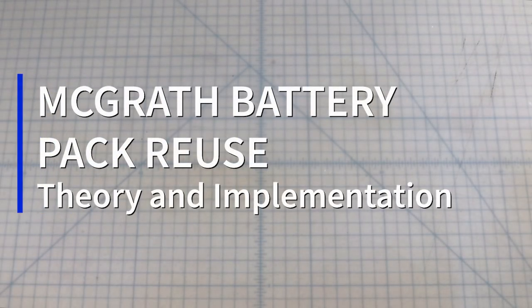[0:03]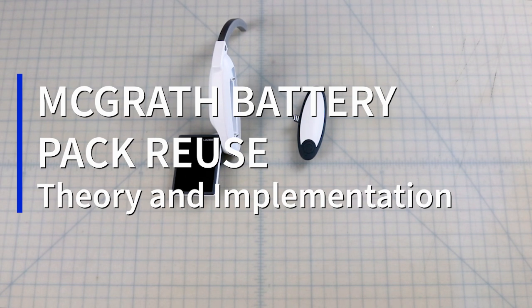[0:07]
In this video, I will discuss a straightforward method for reusing McGrath video laryngoscope batteries. Due to recent production problems with McGrath batteries, which are produced overseas, batteries have been intermittently available for purchase.
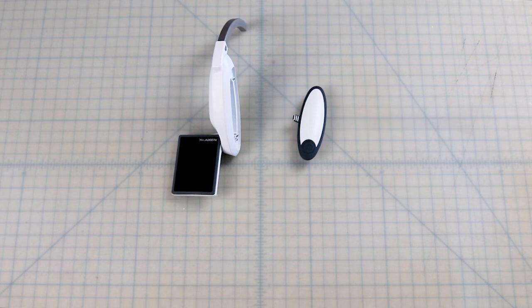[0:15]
Because it is the primary video laryngoscope of my institution, as well as many others, and it is a vital tool during the COVID crisis that we cannot be without, I wanted to ensure that we would not lose access to this vital tool due to battery unavailability.
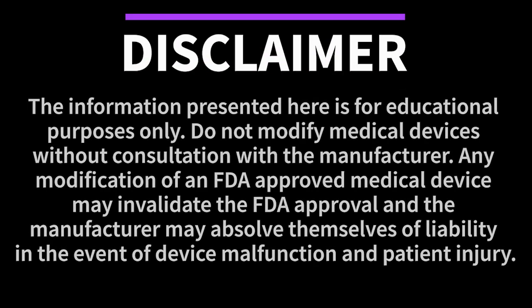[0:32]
Warning: this information is presented for educational purposes only. Do not modify medical devices without consultation with the manufacturer. Any modification of an FDA-approved medical device may invalidate the FDA approval, and the manufacturer will likely absolve themselves of liability in the event of device malfunction and patient injury.
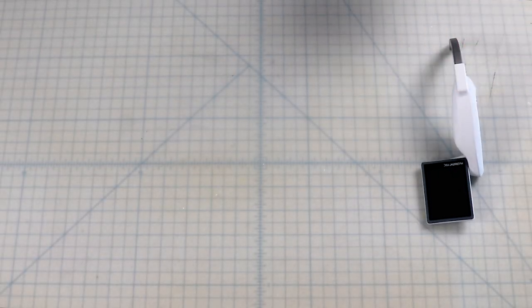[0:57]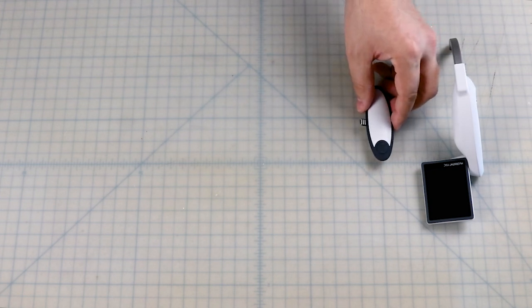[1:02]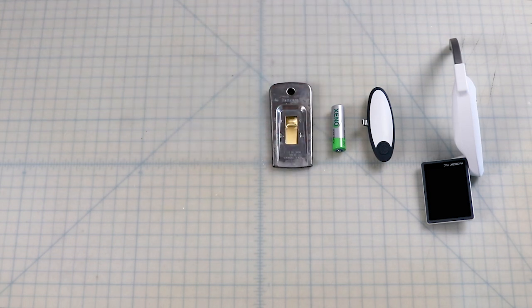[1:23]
Items that you will need to reuse a McGrath battery pack. Used battery pack. New 3.6 volt AA lithium battery cell. Note that this is not the standard 1.5 volt battery cell ubiquitously used in consumer electronics. However, these battery cells can be purchased online for two to three dollars each. Razor blade. Small screwdriver.
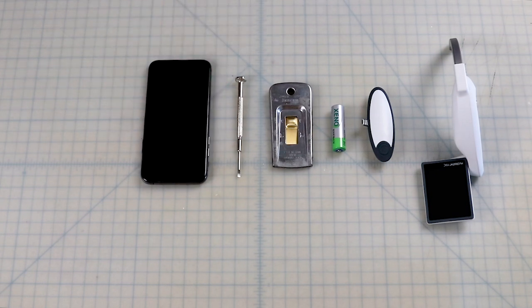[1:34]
Cell phone with near-field communication capabilities, and a cell phone app for NFC reading and writing. Even if you don't use the function, your smartphone probably has NFC capabilities if it was made in the last two to three years. I'll be using an iPhone XS for this video and a free app called NFC Tap. I'll also be using a brand new battery for demonstration purposes, but you will not need a brand new battery to follow this guide.
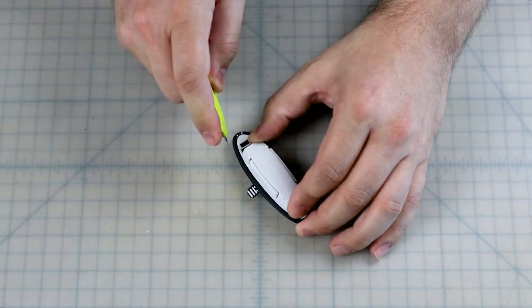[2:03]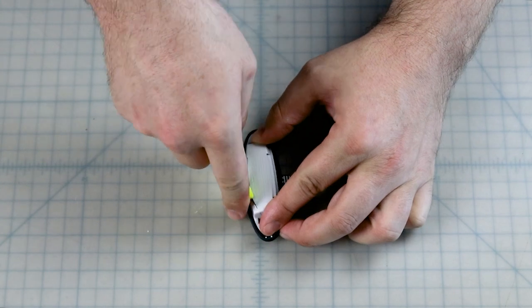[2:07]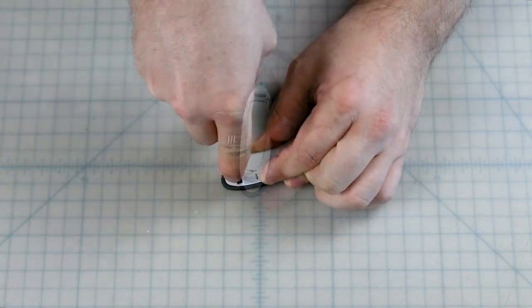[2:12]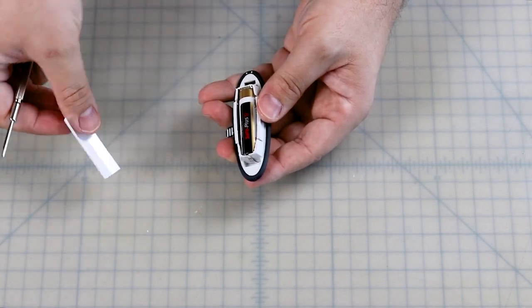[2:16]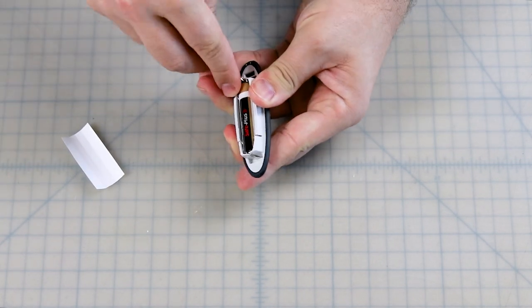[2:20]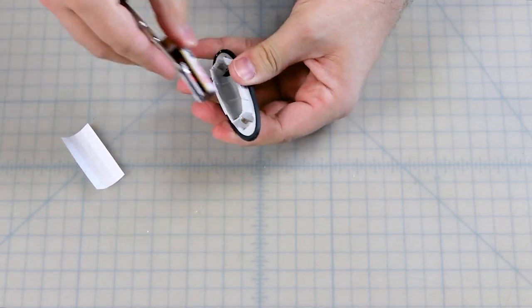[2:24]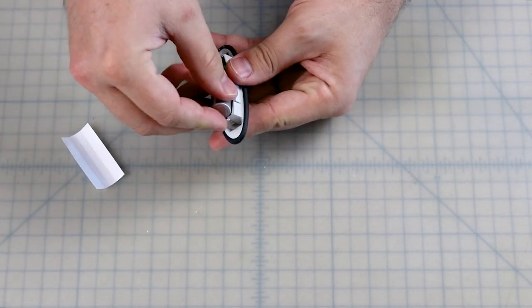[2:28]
Start by cutting the battery cell out of the back of the battery pack. Remove the paper wrapping and gently pry out the old battery cell so as not to damage the housing. Replace the old battery cell with a new one. I don't know that the paper casing has any purpose, but I place that back as well.
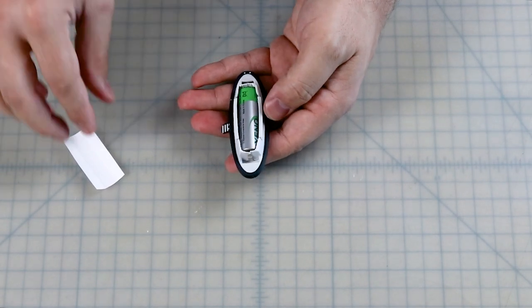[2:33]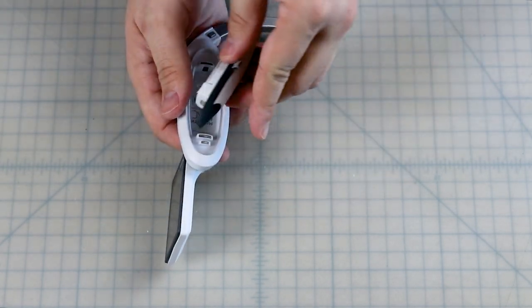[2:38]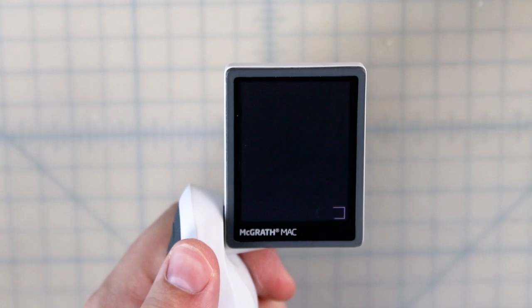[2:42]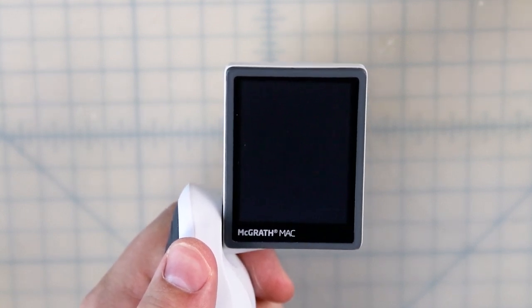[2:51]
If we insert the battery pack back into the McGrath and press the power button, we see that the battery pack powers the laryngoscope, but still reads as empty. This is because the number usually shown at the bottom of the screen is not a battery meter, but a preset counter that starts at 250 minutes and counts down to 0 minutes, regardless of battery level.
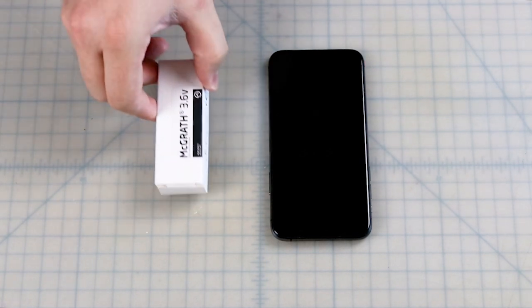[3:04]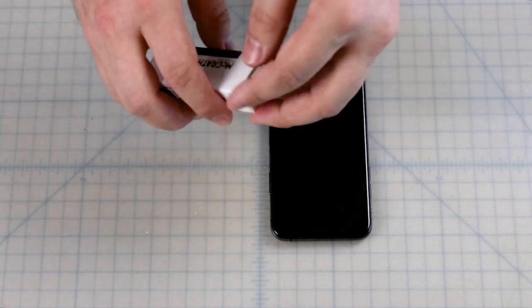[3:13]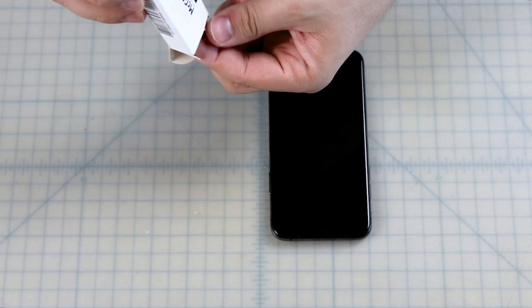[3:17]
In order to reset the battery counter, we are going to take the data from the RFID tag of a brand new battery and write it to the old battery, essentially resetting the counter to 250 minutes, as if it was a brand new battery. First, I'll hold the battery pack against the NFC reading region of my phone and open the NFC app.
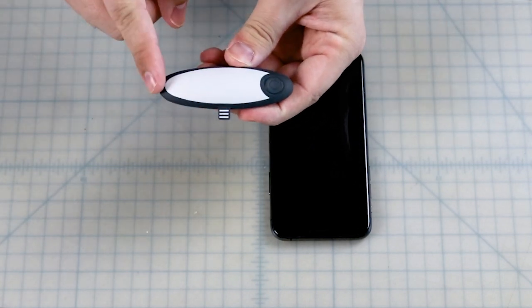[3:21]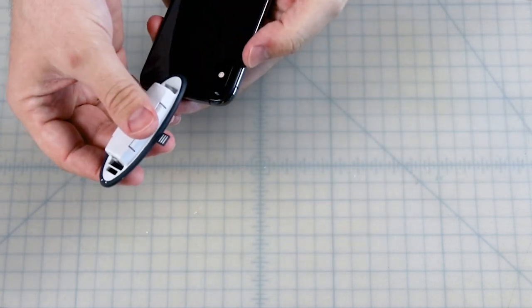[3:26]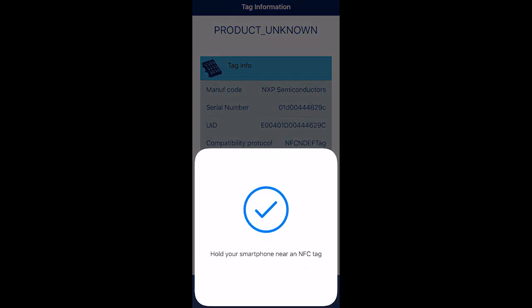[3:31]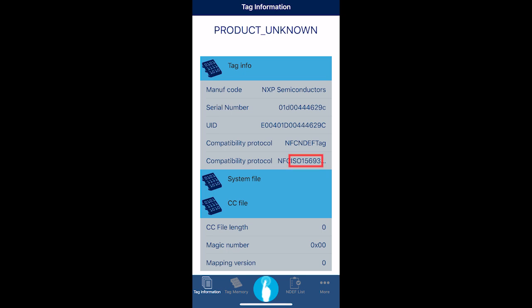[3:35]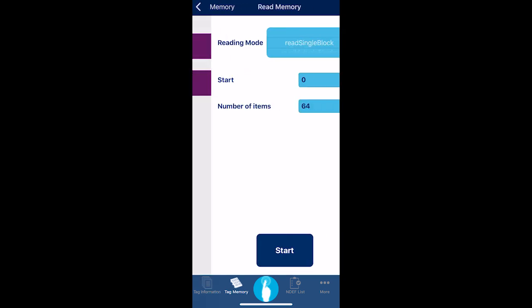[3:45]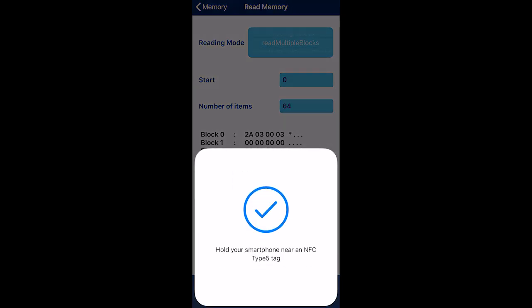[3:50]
On this particular app, press read tag to read the chip and calibrate the app to the correct communication protocol. On some apps, you will need to set the protocol manually. The protocol is ISO 15693. We'll then go to the memory tab and press read, read multiple blocks, and start. This will give us the data we need in block 0 and block 1. The rest of the blocks are not needed.
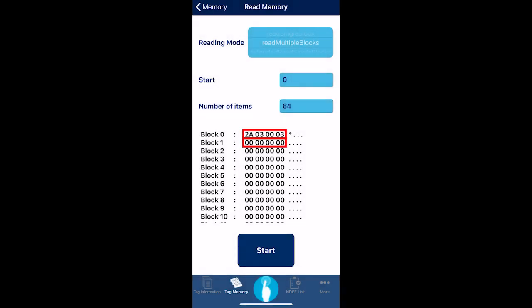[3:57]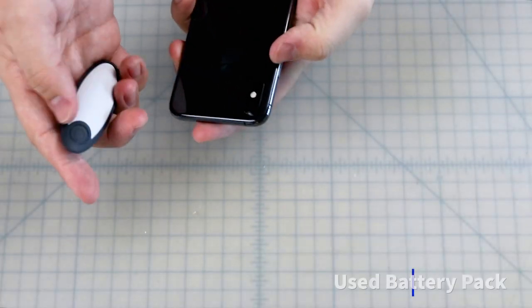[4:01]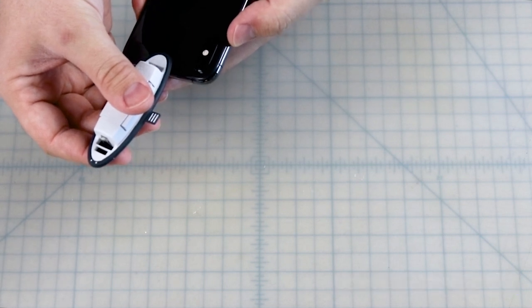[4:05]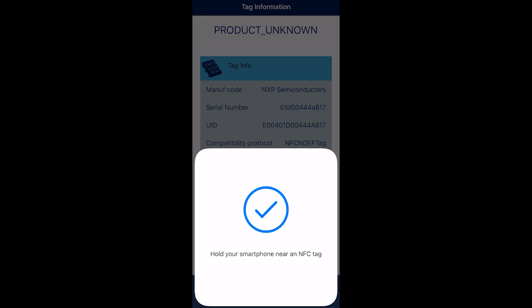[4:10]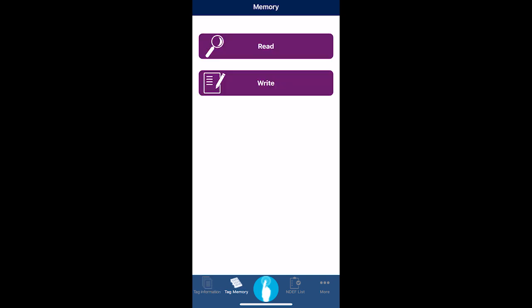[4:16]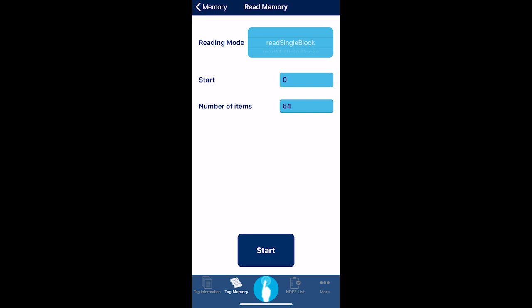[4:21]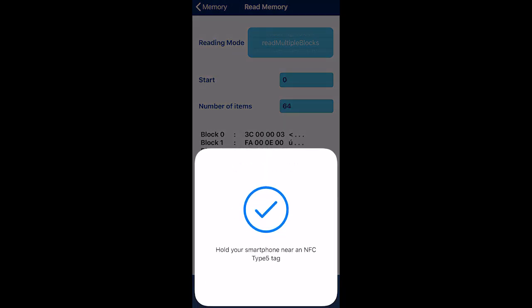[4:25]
Now that we have the block info we need, start the process again with your used battery pack. Open the app, press read tag to calibrate the app to the correct communication protocol. To see for yourself that block 0 and block 1 are different in the used battery, go to memory, read, read multiple blocks, start. See that block 0 and block 1 have different values compared to the new battery.
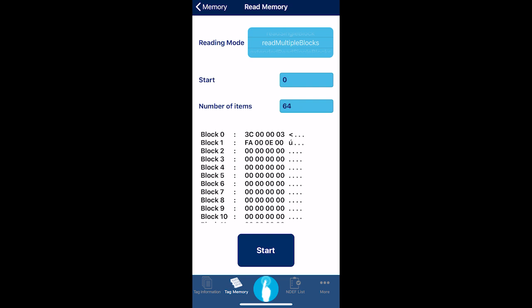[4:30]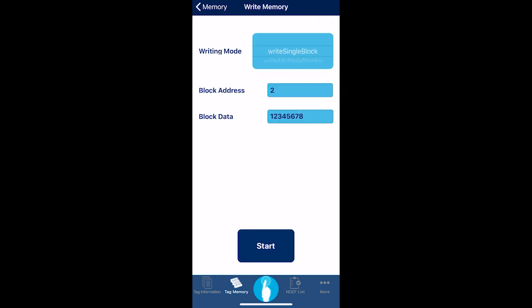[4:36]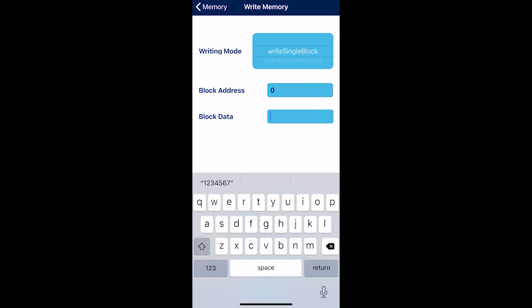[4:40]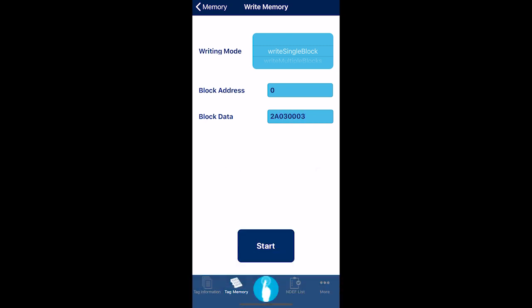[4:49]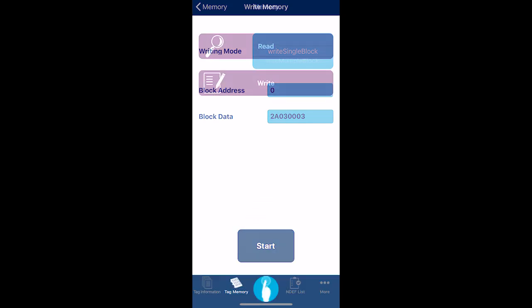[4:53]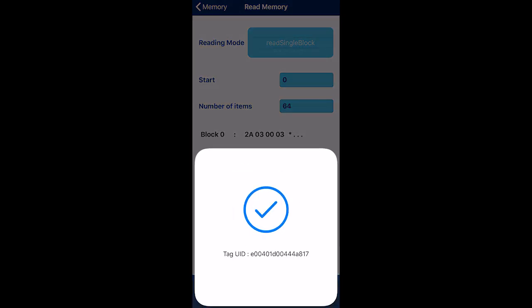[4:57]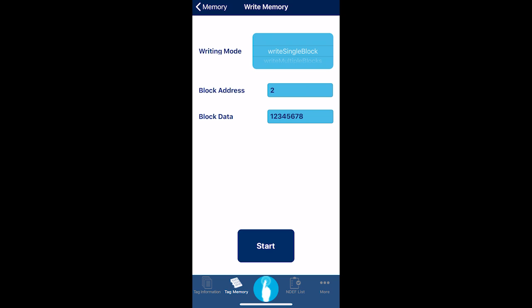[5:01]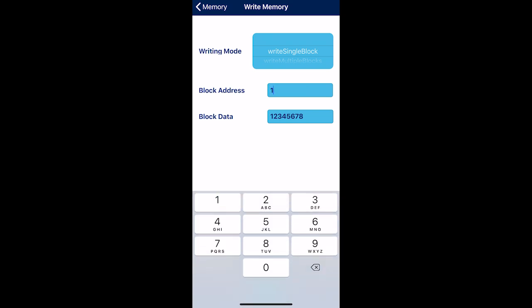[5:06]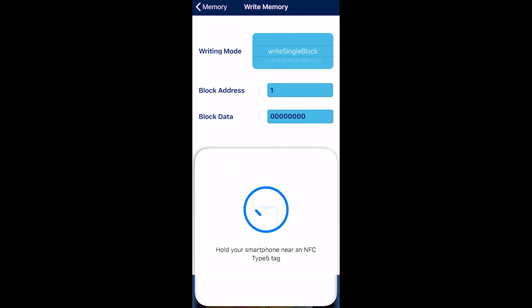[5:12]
Now go back to the memory tab and hit write, write single block. To block 0, write 2A030003, press start. Now you can return to the read tab to verify that block 0 has been written. Now to finish, go back to the write tab and write 8 zeros to block 1. You can go back to read and verify success in block 1 if you like.
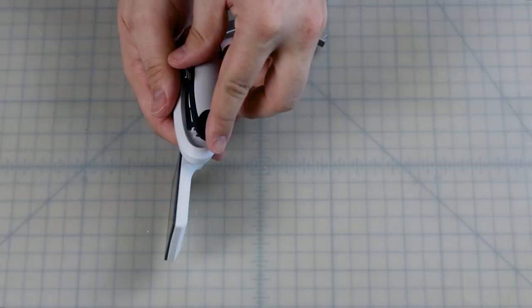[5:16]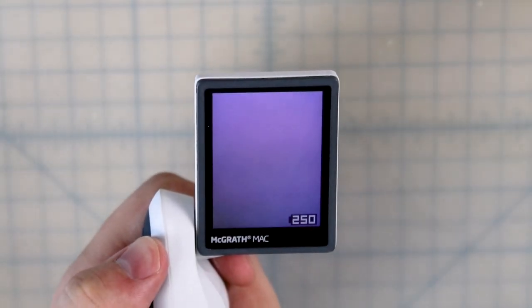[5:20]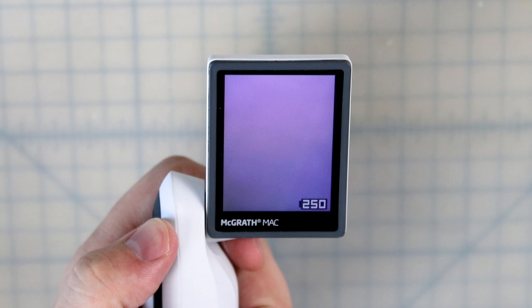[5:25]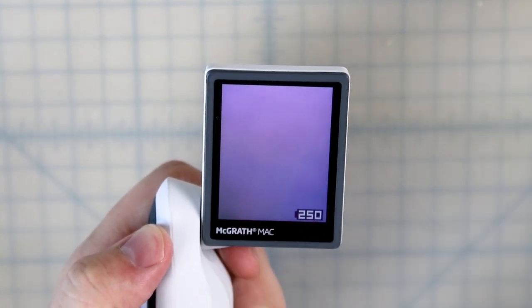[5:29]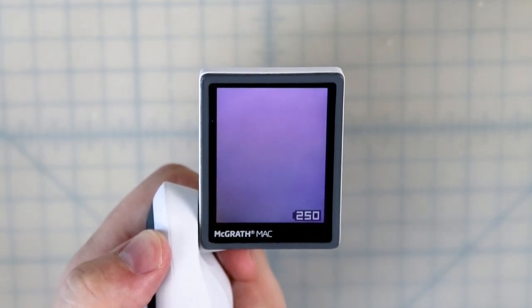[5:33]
Now place the battery pack into your laryngoscope and press power. This time the laryngoscope is functional. We can see here that the battery counter has returned to 250. Use your battery pack as normal, and when the battery pack is depleted, simply perform the process again.
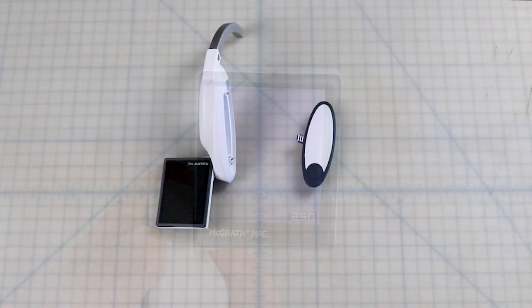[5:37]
One additional question that I did not explore is, can the 250 minute counter be reset without replacing the battery cell? That is, how much time is left on the battery when the counter reaches zero? Can one simply reset the counter and get another 250 minutes? Because the replacement battery cells are so inexpensive, and blindly resetting the counter might lead to the device shutting off during intubation, I chose not to explore this concept.
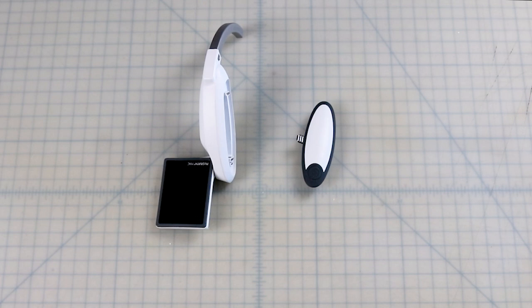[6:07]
Hope this guide was helpful.